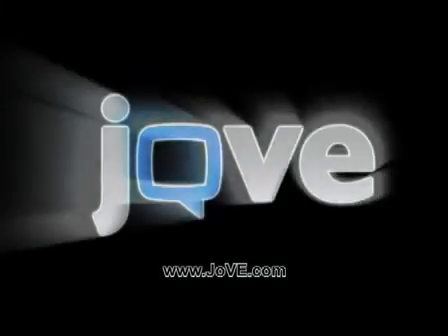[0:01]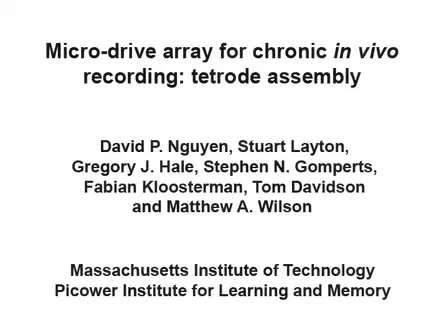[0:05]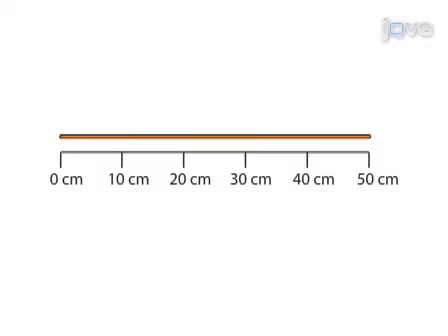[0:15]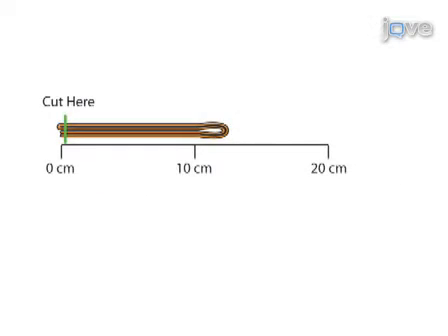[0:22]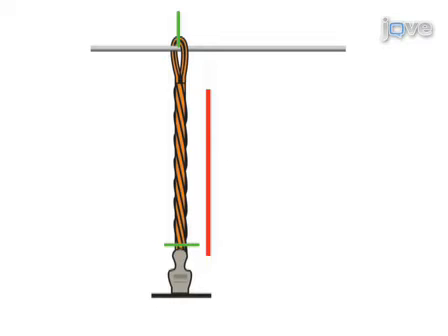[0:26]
In this protocol, we describe the fabrication and installment of tetrodes, bundles of four electrodes for chronic in vivo recording in the awake rodent. To begin tetrode fabrication, a strand of microelectrode wire is folded twice upon itself to make a bundle of four parallel wires. These wires are then twisted together and fused with a hot air gun.
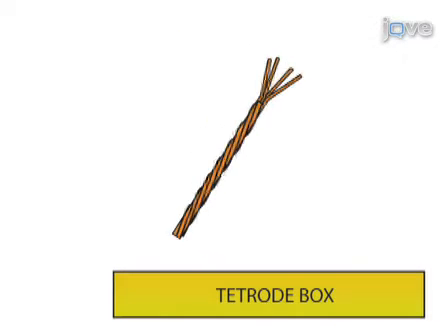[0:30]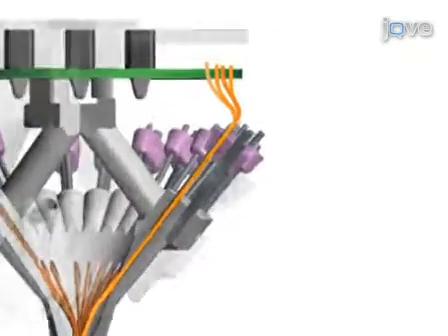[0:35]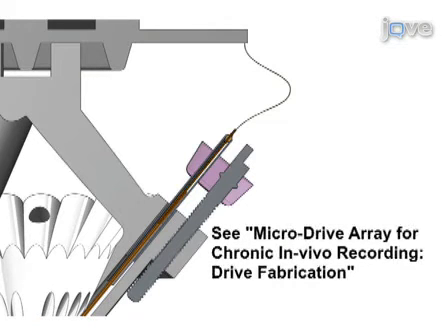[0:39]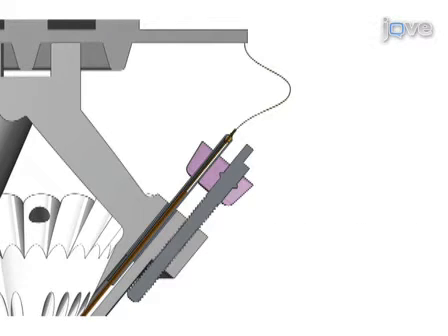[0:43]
Each finished tetrode is placed in a storage box while more tetrodes are made. Each tetrode is inserted down a dedicated pathway, entering through an opening in a linear actuator and exiting through the base of the microdrive array. Each of the four wires of the tetrode are connected to separate pins on an output connector board affixed to the top of the microdrive array.
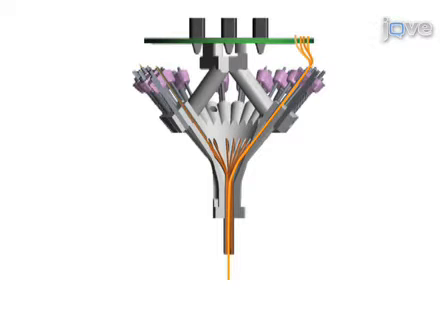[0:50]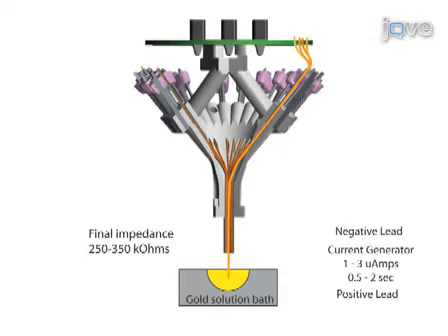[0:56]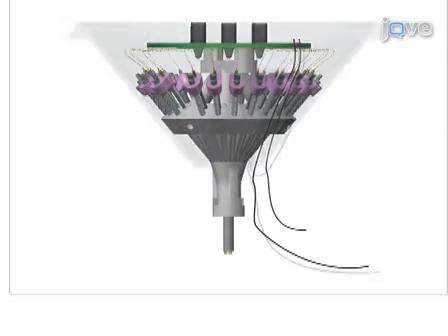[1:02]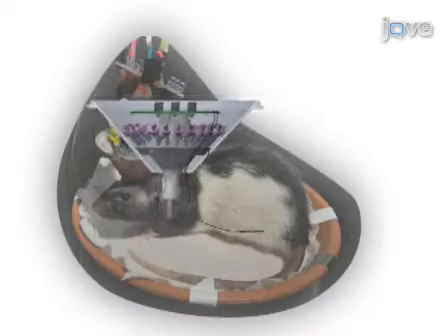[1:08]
The impedance of each channel of the tetrode is lowered using a gold electroplating process. Once all the tetrodes have been installed and electroplated, two ground wires are attached to the respective pins on the connector board, and a protective cone is affixed to the frame of the microdrive array for protection. After the cone has been grounded, a fully functioning tetrode microdrive array is ready for implantation.
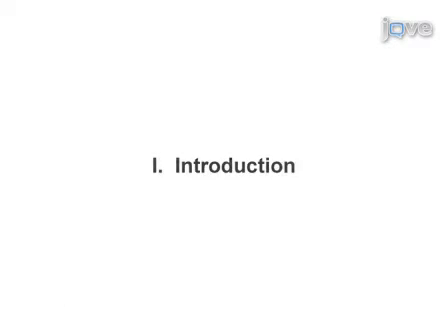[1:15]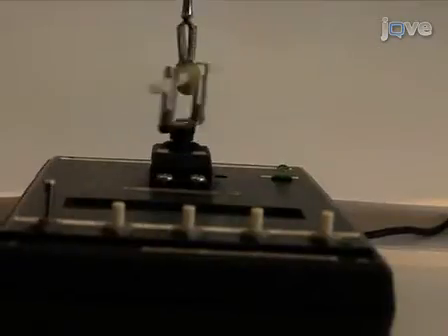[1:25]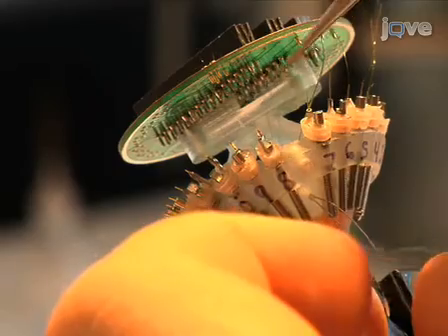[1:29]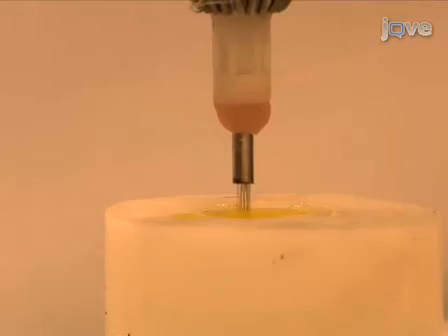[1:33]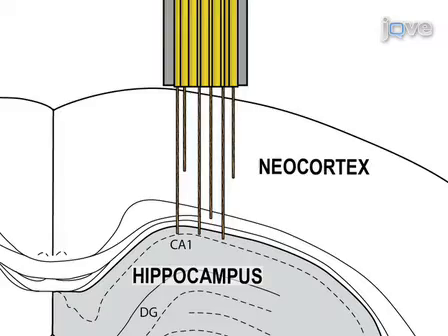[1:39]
Hi, I'm Dave Nguyen from the laboratory of Matt Wilson in the Picower Institute for Learning and Memory at MIT. Today, we will show you a procedure for fabricating tetrodes, loading tetrodes, and completing the final stages of the microdrive array construction. We use this procedure in our laboratory to study coordinated neural activity between large populations of neurons in an awake behaving animal preparation. So, let's get started.
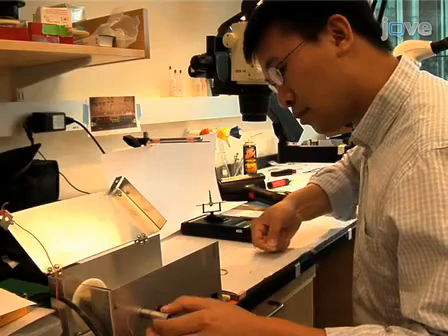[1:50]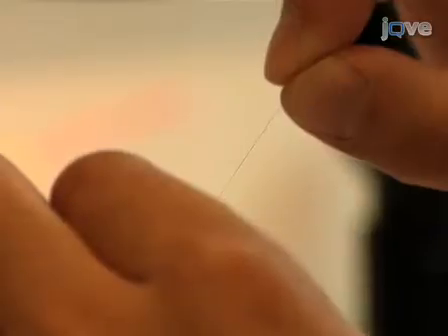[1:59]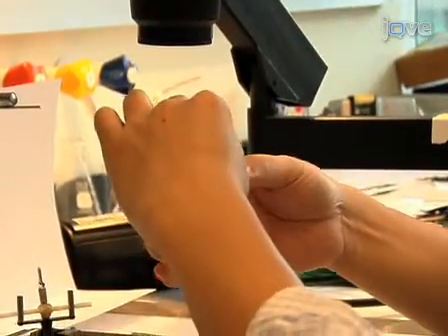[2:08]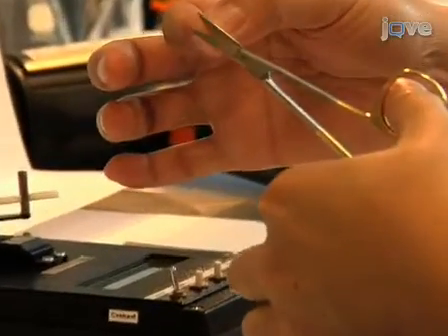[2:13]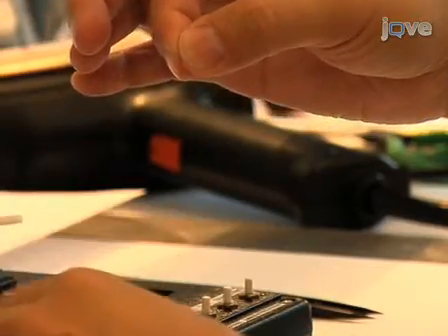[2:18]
To build the tetrode for our standard microdrive array, we begin with a 50 centimeter length of insulated 12 micron nichrome wire. Fold the wire in half. Run your fingers along the pair to make them stick together. Make sure the pair of wires have good contact throughout their entire length. Fold the pair again by holding the two ends together. Make sure that the loop formed on one end is not kinked. Cut the four wires on the non-looped end so that the four tips are aligned.
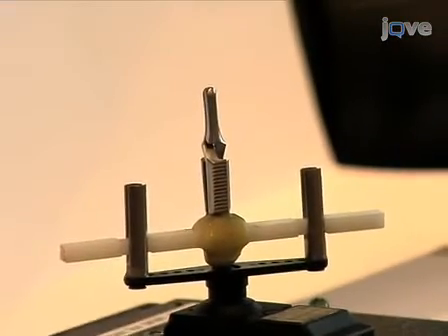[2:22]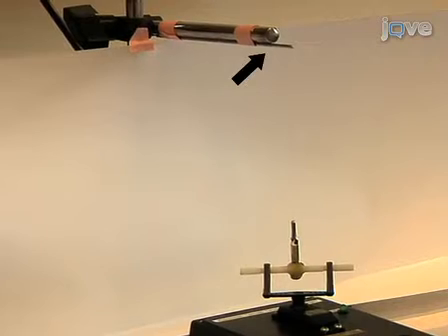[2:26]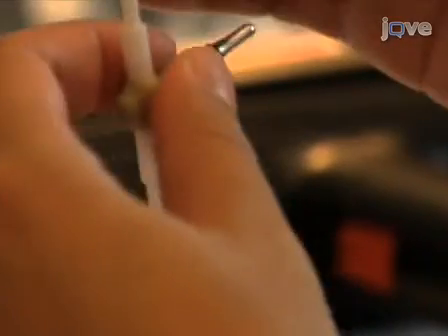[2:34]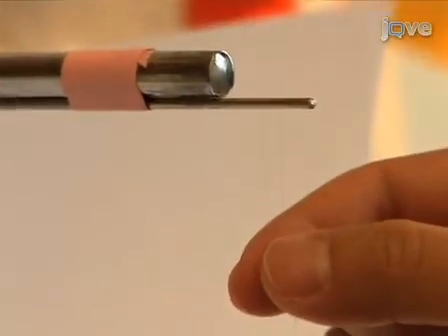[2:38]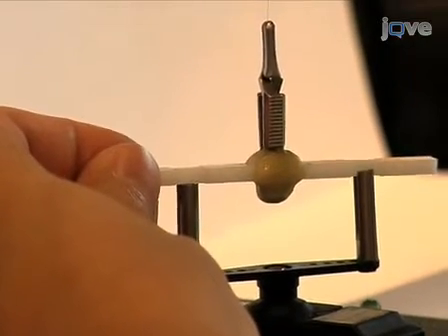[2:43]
For the next step, you will need a modified alligator clip, a motorized turning device, and a horizontal bar above the turning device. The alligator clip is modified by gluing a plastic bar to the base of the clip. When the tips are exposed, clamp the four wires together with the modified alligator clip. Hang the loop of wire over the horizontal bar. Place the alligator clip into the motorized stage.
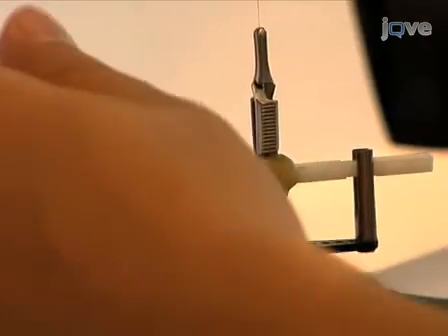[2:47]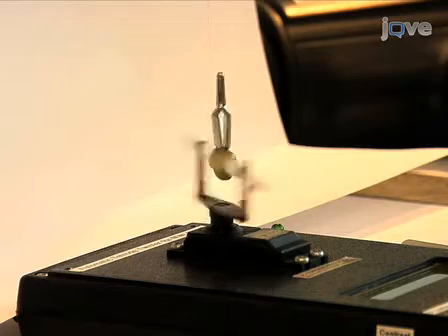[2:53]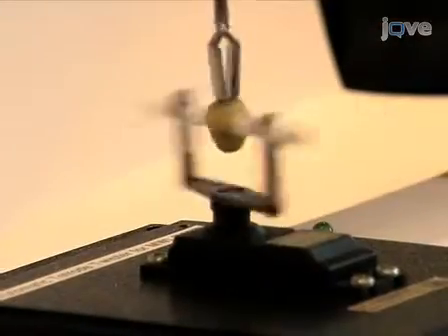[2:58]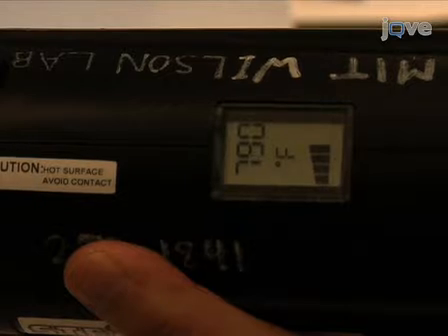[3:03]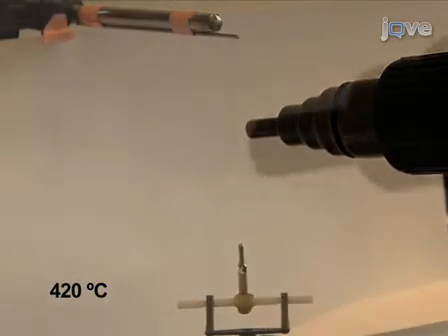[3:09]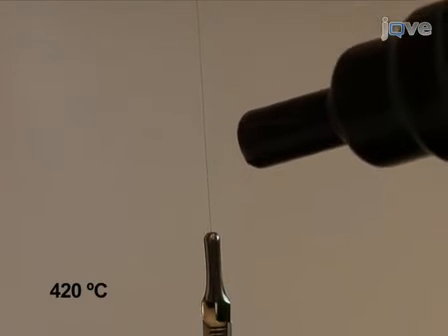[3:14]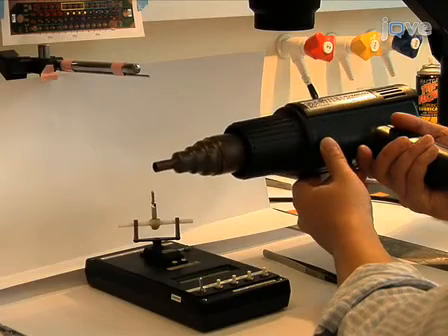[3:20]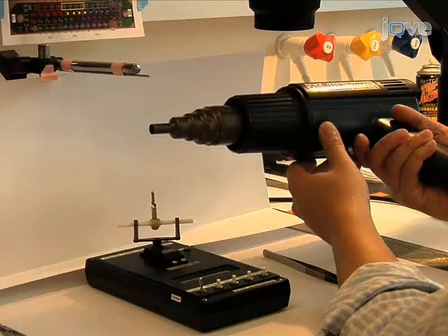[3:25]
Apply 80 clockwise twists, followed by 40 counterclockwise twists to the wire bundle over the course of approximately 3 minutes. These parameters can be varied according to your needs. After tetrode twisting is completed, fuse the wires together by heating from 3 different angles with a heat gun using medium to low flow. For each angle, begin 1 to 2 centimeters below where the wire bundle splits. Then run the heat gun down and up at a 2 centimeter distance from the wires for about 5 seconds. Use caution, as high temperatures will completely melt the insulation and lead to short circuits.
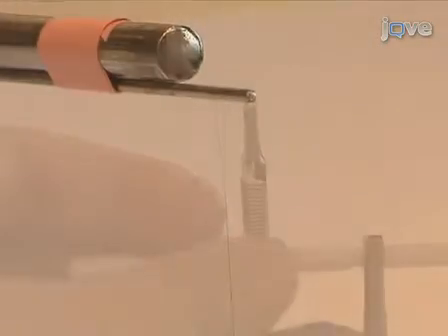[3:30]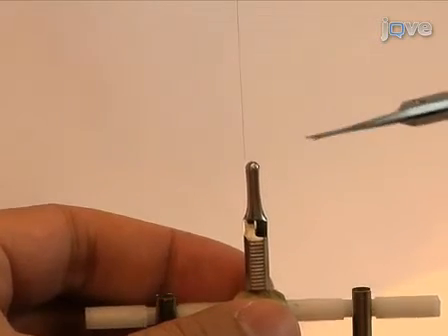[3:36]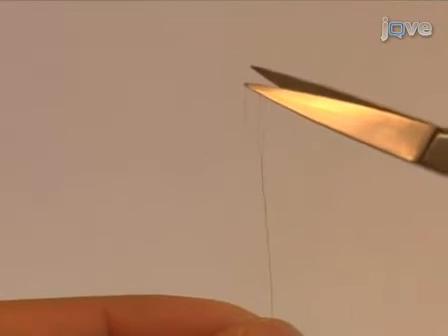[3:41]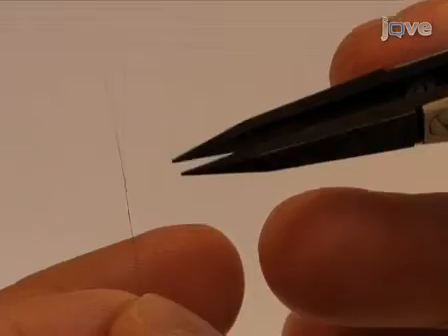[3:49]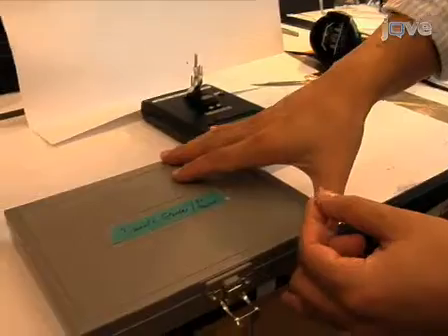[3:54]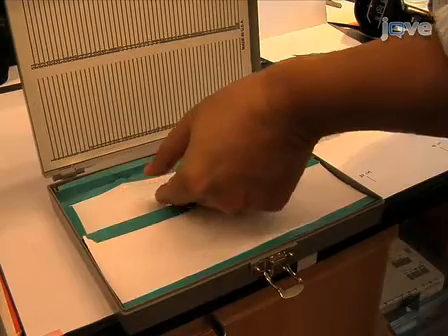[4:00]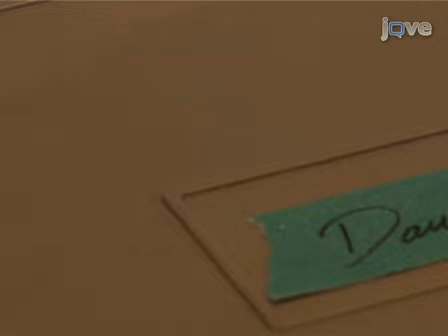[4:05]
Now that the wires have fused together, remove the tetrode from the twisting apparatus by gently lifting the alligator clip to relieve tension on the tetrode, and cut the tetrode near the alligator clip. At the other end, cut the loop such that there are 4 non-bonded strands of wire of equal length. Next, separate the individual strands at the top by gently bending the wires with a soft-tipped pair of tweezers. The tetrode is now ready for loading into the microdrive array. Make 21 to 25 more tetrodes and store them in a dust-free box until it is time for the tetrode loading process.
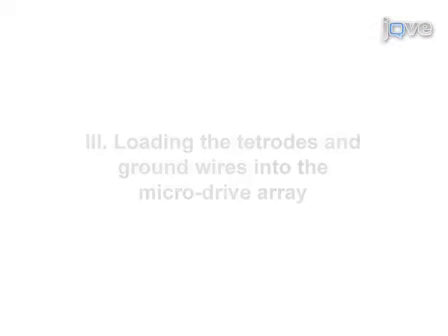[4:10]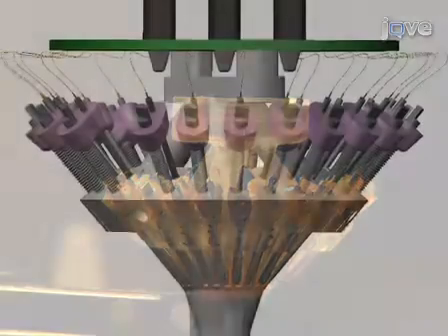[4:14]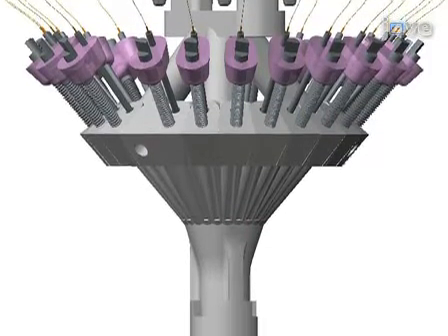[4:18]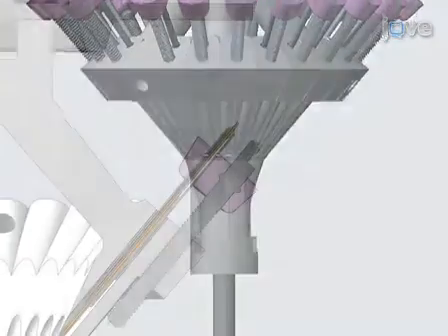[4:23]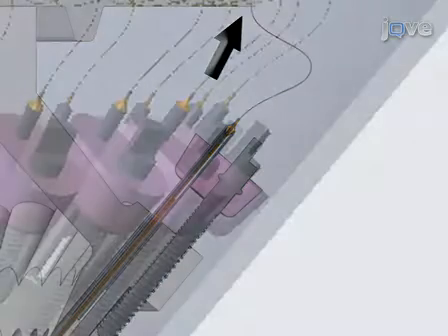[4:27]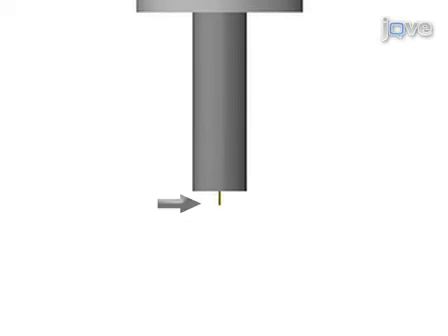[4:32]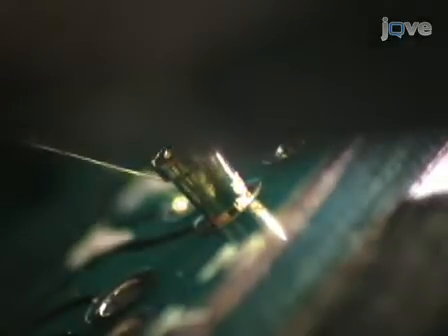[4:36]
To proceed, you will need a complete microdrive array. If you have not yet built one, refer to the video Microelectrode Drive Array for Chronic In Vivo Recording, Microdrive Array Fabrication. In our design plan, the tetrode will be attached at one end to connector hardware and will run through the polyimide carrier tube in the microdrive such that the electrode tips extend below the base of the microdrive array. We will now demonstrate this loading process for one tetrode.
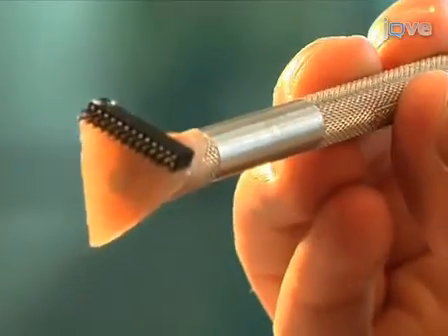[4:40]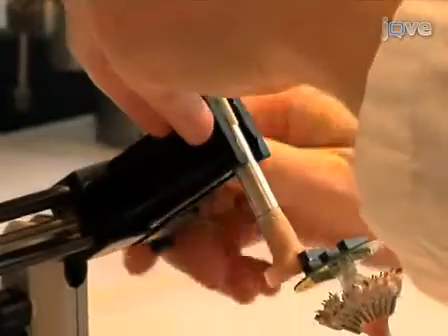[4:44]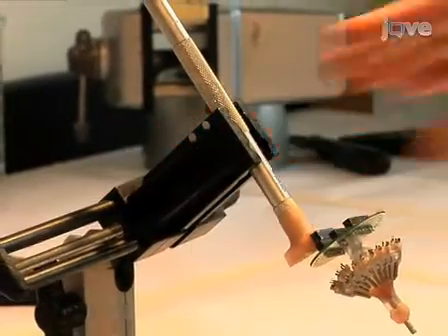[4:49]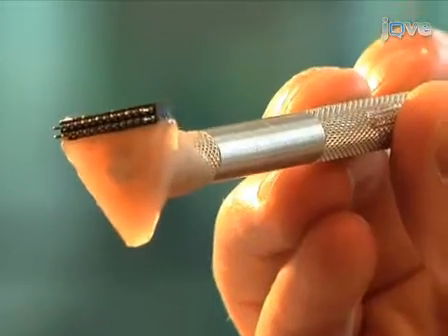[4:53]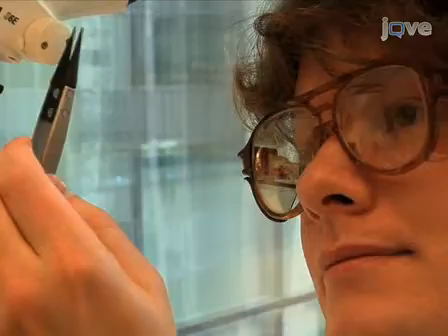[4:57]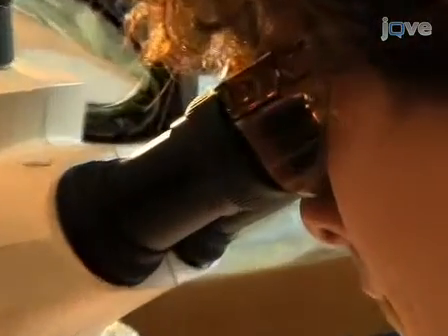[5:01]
Before beginning, build the drive holder that can be attached to the connector board on one end, and on the other end can be clamped by a Panavise. In this example, the drive holder is a Mill-Max connector glued to one end of an X-Acto knife handle. Holding the tetrode with soft tip tweezers and using a stereoscope, push the tip of the tetrode into the polyimide carrier tube of one of the microdrives.
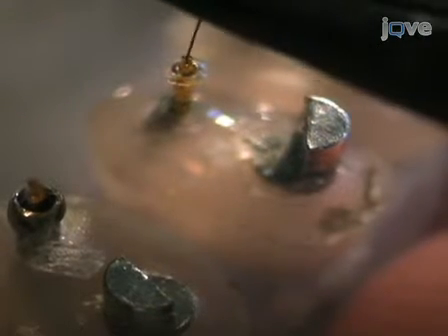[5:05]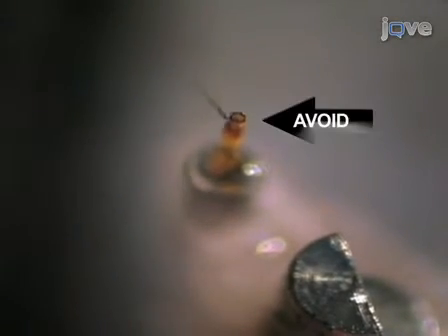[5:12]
Push the tetrode into the tube until the individual electrode wires are close to the connector board at the top of the drive array. Be careful not to kink or bend the wires, as this will cause the tetrode to enter the brain at an angle rather than perpendicular and will weaken the integrity of the tetrode.
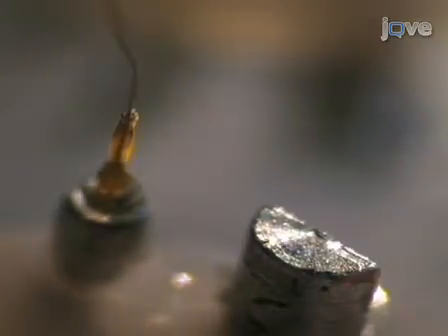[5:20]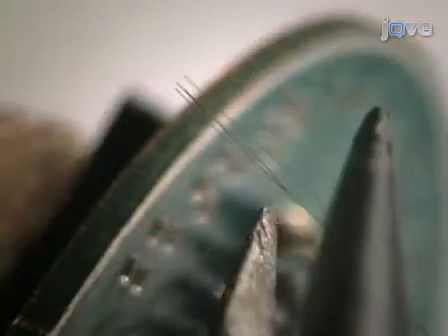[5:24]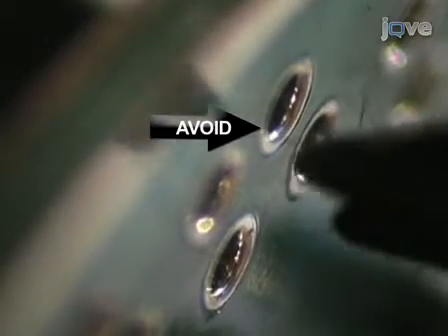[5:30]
Now, gently feed the other end of the four wires into their respective holes in the electrode interface board using soft-tip tweezers. Again, avoid kinking or bending the wires.
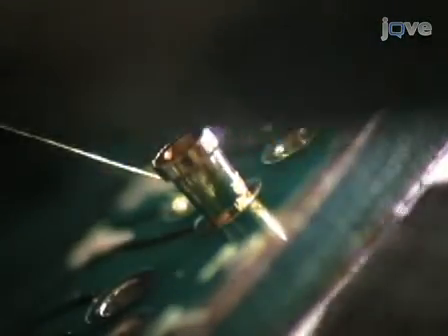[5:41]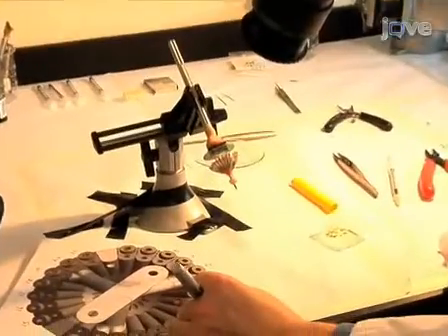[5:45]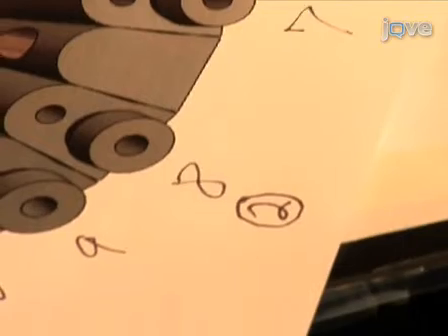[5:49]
With all four wires in place, push the gold pins into their holes with a pair of pliers that have a shortened lower jaw. When the pins are pushed into the hole, they will strip the wire insulation and create an electrical connection. For later reference, keep track of the mapping between microdrives and pin position on the electrode interface board.
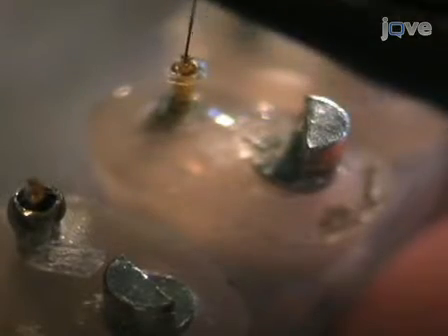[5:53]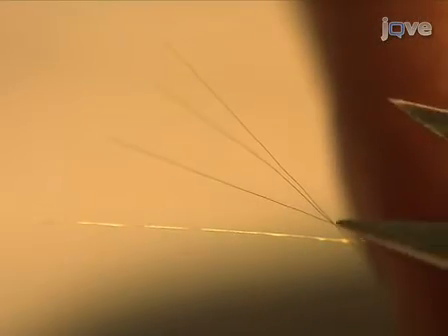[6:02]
Continue loading a total of 18 tetrodes. The three remaining microdrives on the array will be used to house the reference electrodes. Each reference electrode is made of a tetrode that uses only one of the four unbonded wire ends. To attach the reference electrodes, follow the loading procedure but attach only one of the four electrodes to the respective reference electrode pin on the connector board.
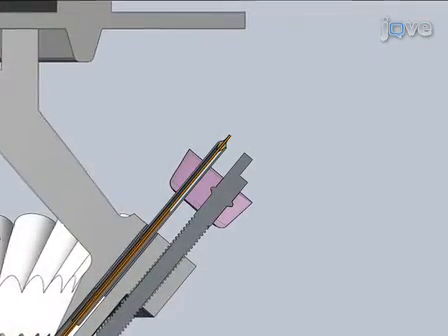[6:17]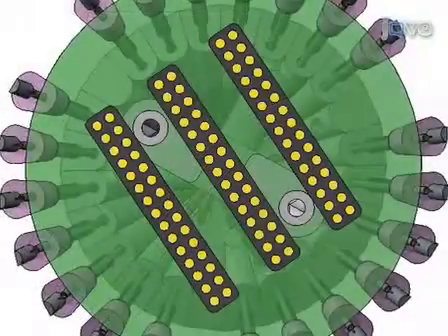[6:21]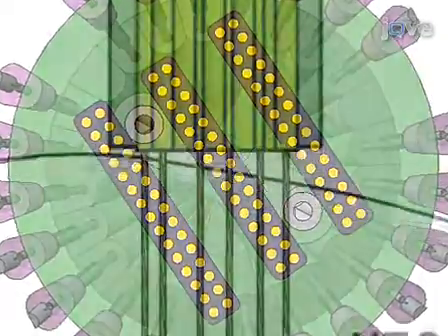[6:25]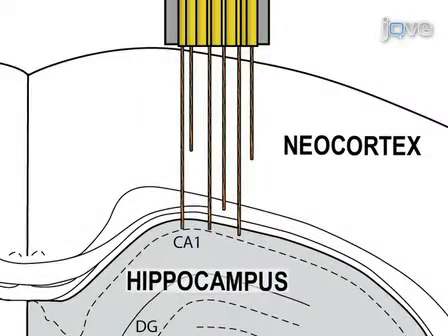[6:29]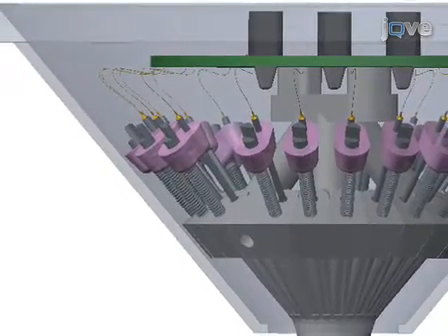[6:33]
If you are planning multi-site recordings, it may be worthwhile to plan out the connections from the tetrodes to the connector board ahead of time. For example, cluster tetrodes that are targeted to one anatomical region together on the electrode interface board. This should minimize the possibility of adjusting the wrong tetrode during experiments.
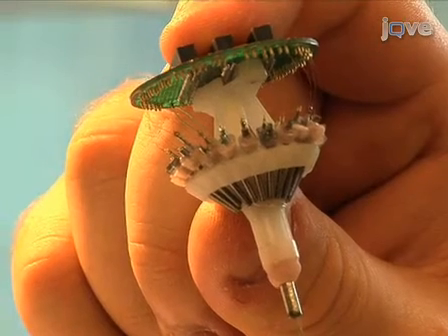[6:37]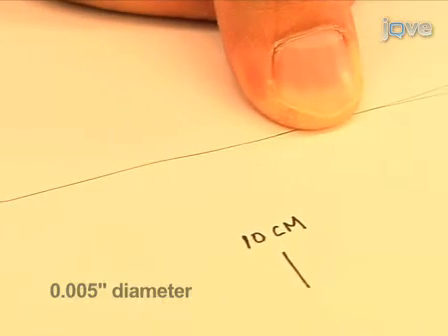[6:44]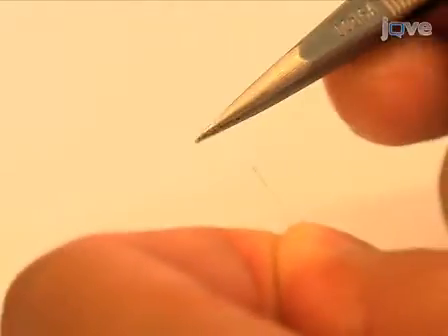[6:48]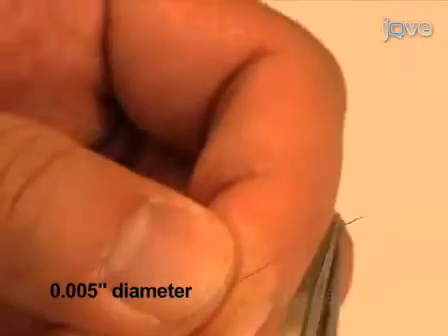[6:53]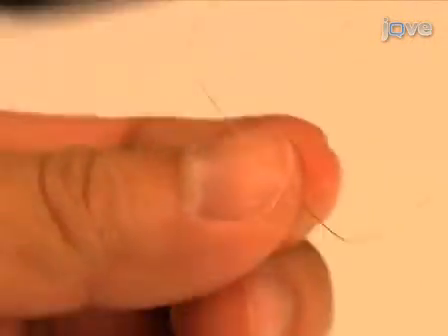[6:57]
Once tetrode loading is completed, make two ground wires, one for the animal and one for the protective cone. Cut one 6-inch long insulated steel wire and remove 3 millimeters of insulation using metal tweezers from each end of the wire. Then cut a 4-inch long insulated steel wire. Remove 3 millimeters of insulation at one end and 1 centimeter at the other end.
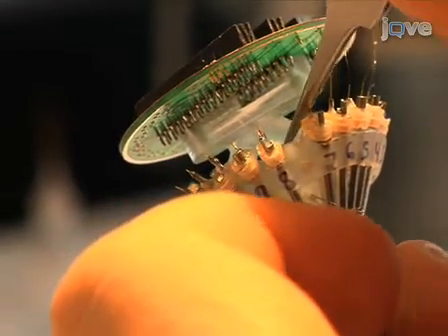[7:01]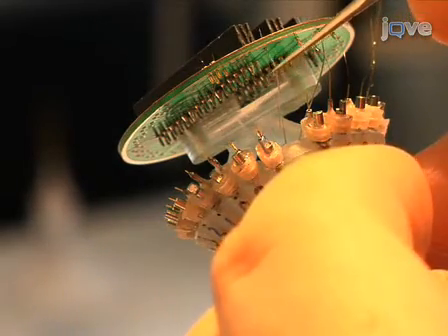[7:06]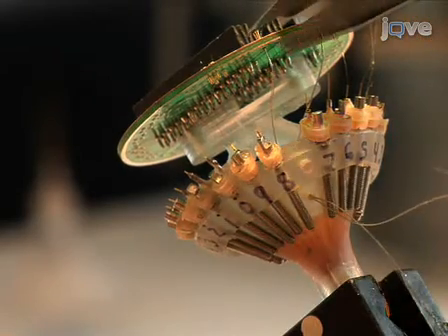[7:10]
Route the 6-inch ground wire through the hole on the side of the microdrive array and up towards the interface board. Connect the exposed wire to the electrode interface board with a gold pin at the designated ground hole. This wire will connect to the animal's skull.
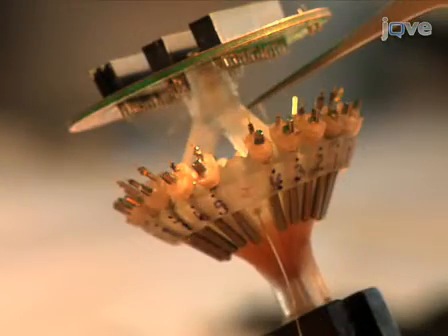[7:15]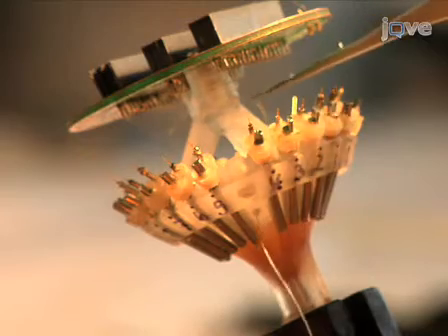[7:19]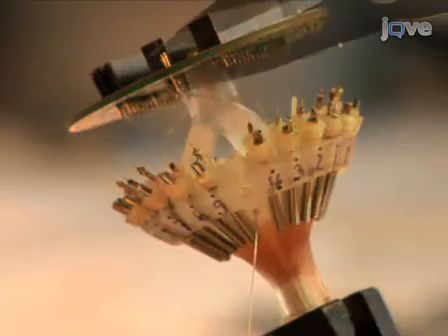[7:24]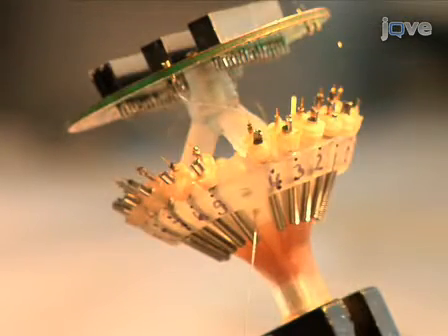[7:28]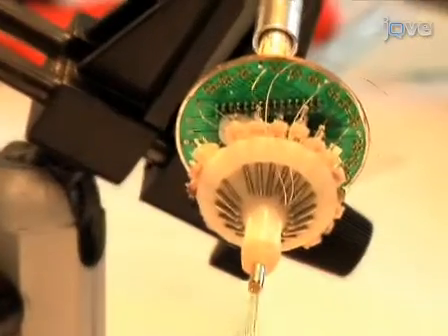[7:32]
Route the 4-inch ground wire parallel to the previously installed ground wire. Connect the 3 millimeter stripped end to the electrode interface board using a gold pin at another designated ground hole. This wire will later be connected to a protective cone, which will act as a small Faraday cage to reduce noise pickup. We are now finished connecting wires and can proceed with refining our tetrodes.
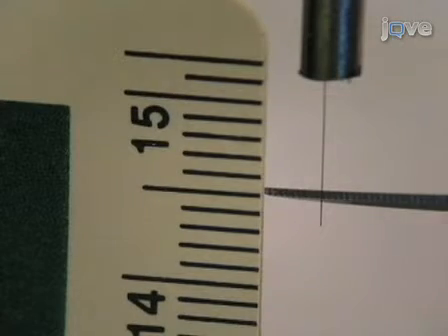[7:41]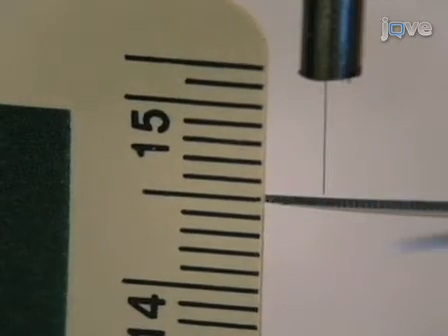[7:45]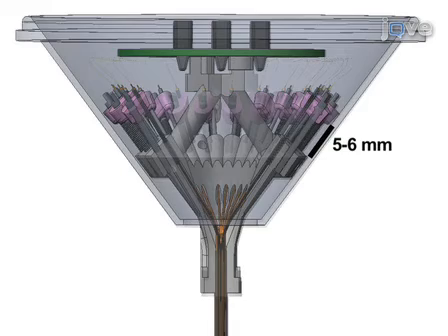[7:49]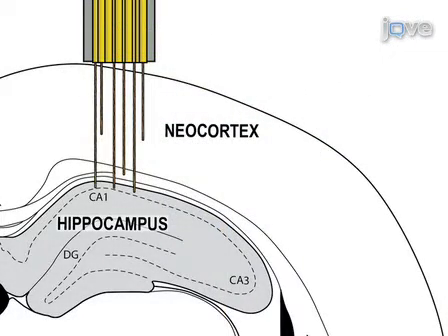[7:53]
Our goal in this process is to cut all the tetrodes so that they are slightly longer than the depth of the target brain structure. In our example, the microdrives are designed for a maximum travel of 5 to 6 millimeters, sufficient to reach many neocortical areas and the dorsal hippocampus of an adult rat.
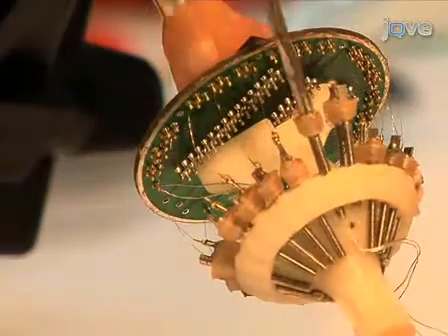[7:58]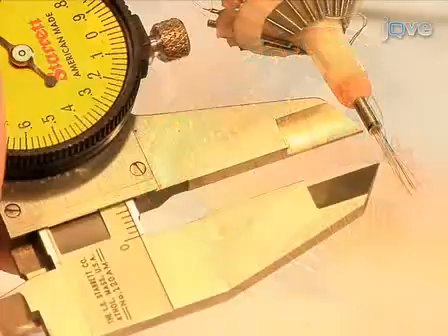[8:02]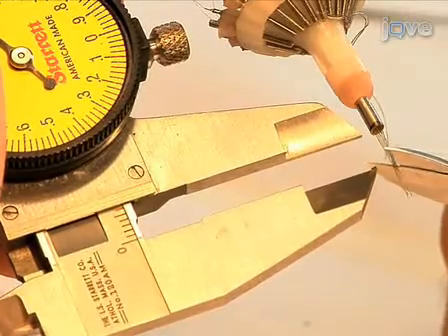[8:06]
First, lower all the microdrives so that the tetrodes are maximally exposed. Simultaneously cut all the tetrodes to lengths that are approximately 5 millimeters longer than the desired final length using a pair of sharp, fine scissors.
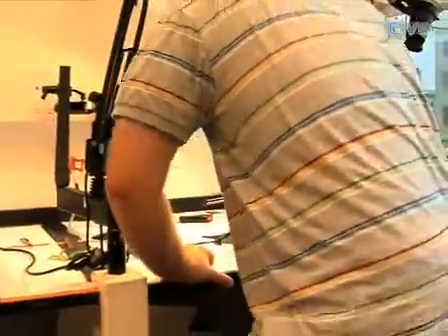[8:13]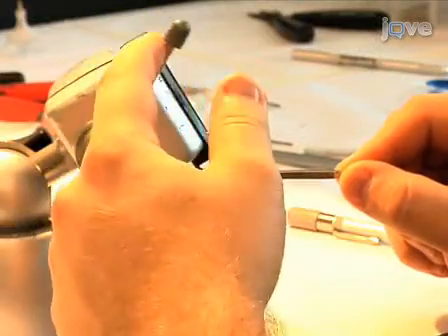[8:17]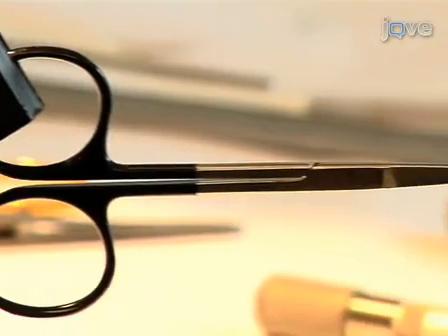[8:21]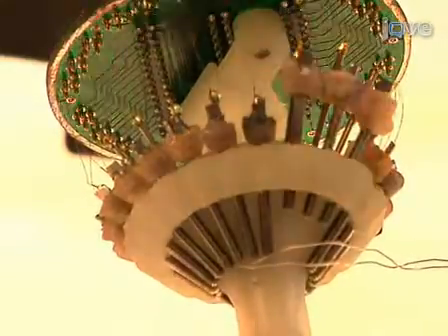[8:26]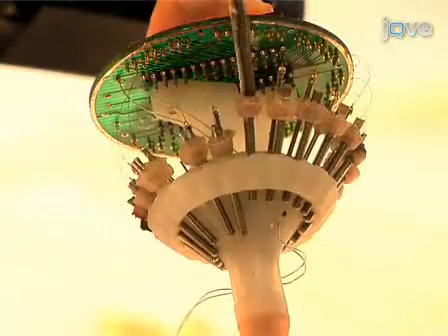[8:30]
For the final cut, prepare a pair of serrated scissors and a pan of ice. Clamp one handle with a slight angle downwards and with serrations facing upwards, while leaving the other handle dangling. Now completely withdraw all the tetrodes into their guide cannulae by turning the microdrives up.
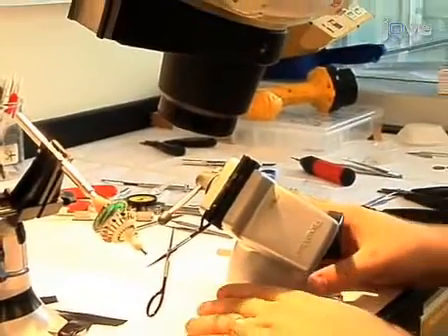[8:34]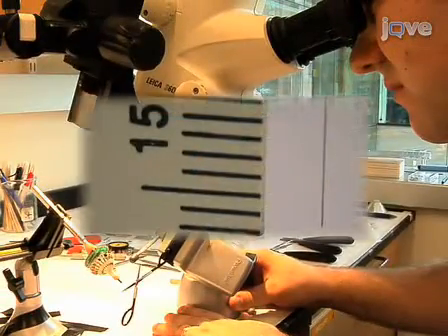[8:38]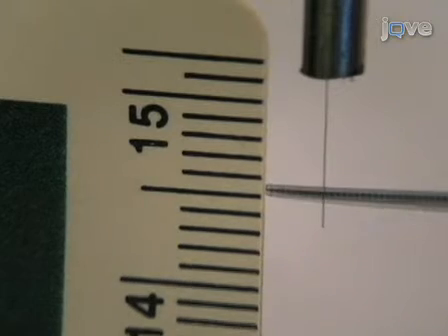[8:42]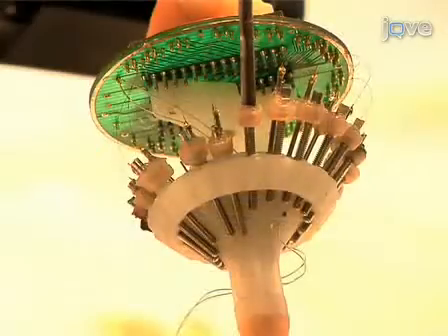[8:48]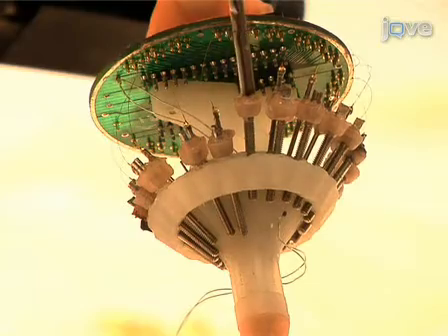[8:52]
Using a stereoscope, fully extend one tetrode out from its cannula. Using a ruler, position the serrated scissors at the desired distance from the guide cannulae. Slowly and gently cut the tetrode with one smooth movement. After this tetrode has been cut, withdraw the microdrive up by 3 to 4 millimeters. Repeat this process for each tetrode until all have been cut. At this point, you are ready for gold plating.
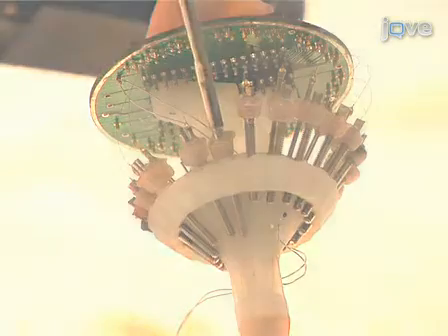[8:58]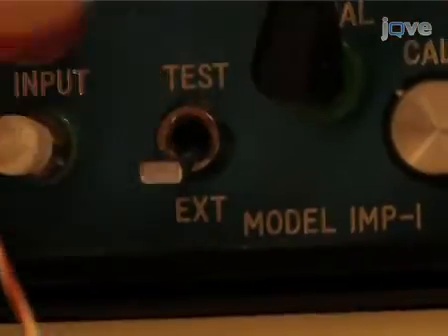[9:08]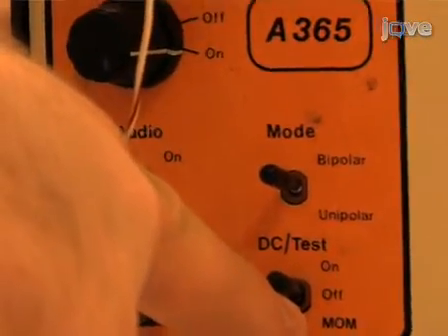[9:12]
Gold plating the nichrome tetrodes is critical for long-term stable recordings. It prevents corrosion and improves biocompatibility. Set up the impedance meter in external mode and the current generator in DC check mode with audio output.
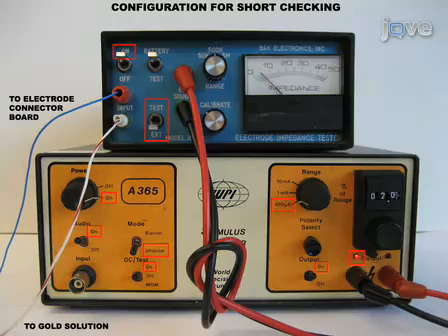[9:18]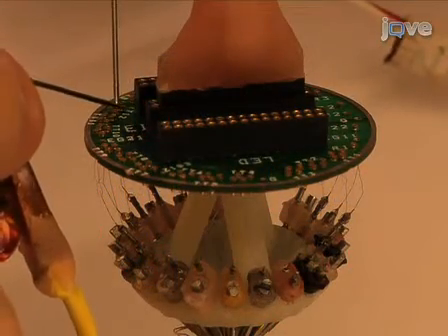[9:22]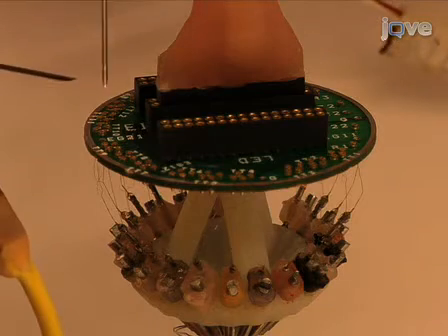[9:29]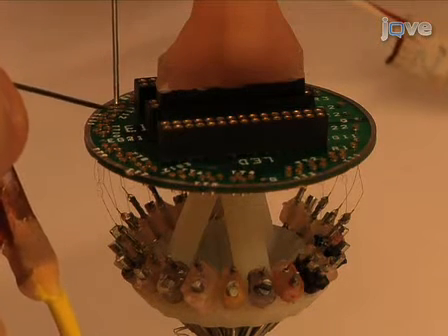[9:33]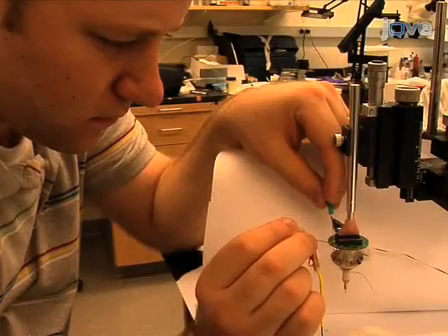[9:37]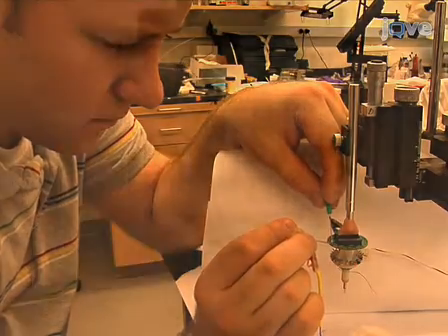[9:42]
Touch the two leads of the current generator to the six possible pairs of channels within each tetrode and use the audio feedback to determine if shorts exist between pairs. A short between channel pairs sounds like this. If a short exists, recut the tetrode with serrated scissors and test again.
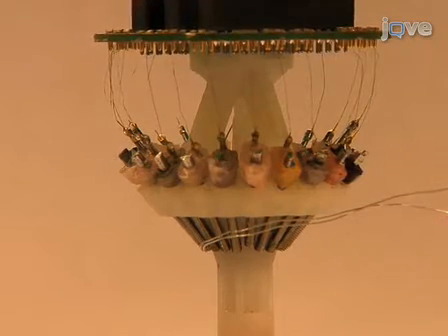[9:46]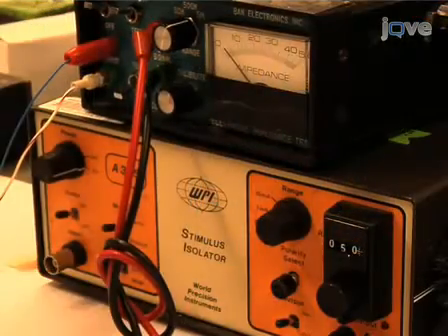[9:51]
If the problem persists, discard the tetrode and replace it. Move all the microdrives down, extending all the tetrodes as far out as possible. Modify the equipment configuration for checking electrode impedance.
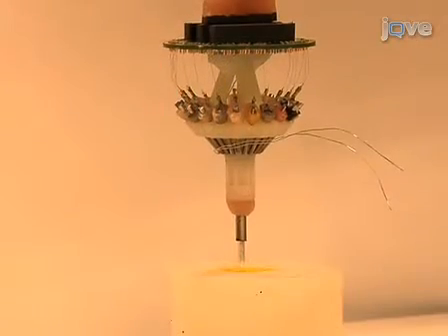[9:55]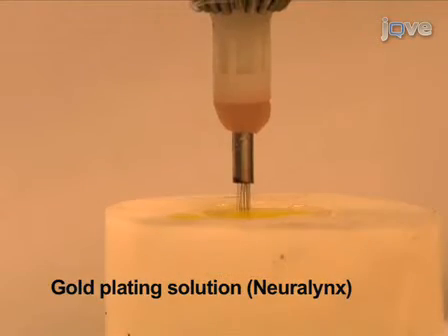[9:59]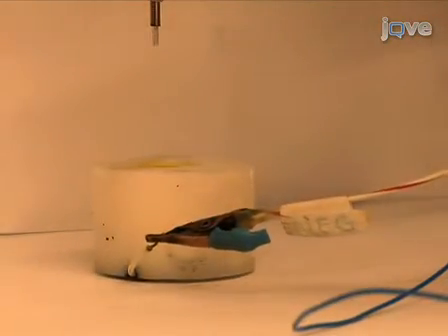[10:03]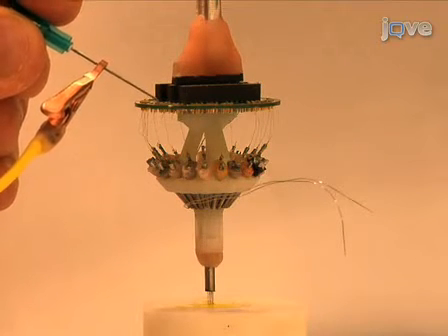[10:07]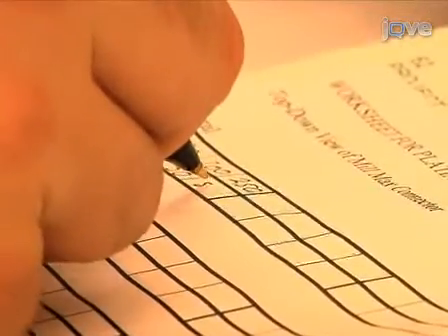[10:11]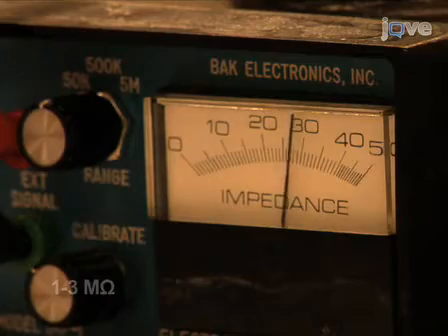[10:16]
Now dip the tips of all the tetrodes into a bath of standard gold plating solution. The gold bath is electrically connected to the negative lead of the impedance meter. Check the impedance of the electrode by touching the positive lead of the impedance meter to the corresponding pin on the connector board. Measure and record the impedance of every wire on the microdrive array. Normal values range from 1 to 3 megaohms.
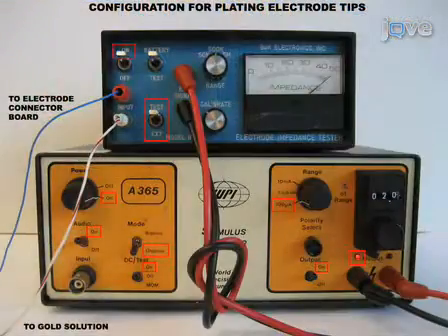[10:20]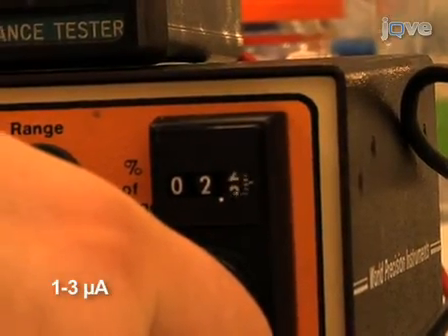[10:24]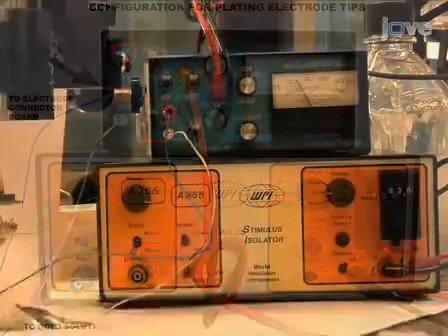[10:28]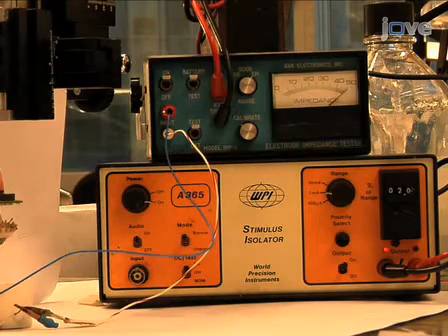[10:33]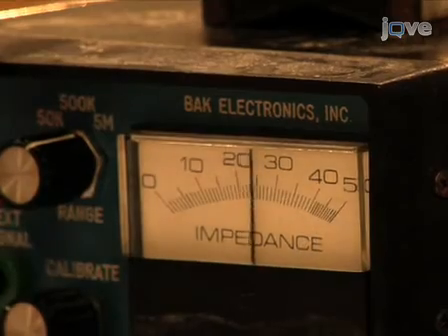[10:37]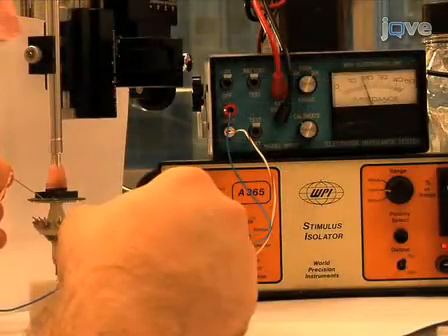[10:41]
On the current generator, set the current between 1 to 3 microamps. Next, securely attach the positive lead of the impedance meter to the pin on the connector board. On the impedance meter, quickly switch from normal mode to bypass mode and back. While in bypass mode, current will pass through the tetrode and gold solution and gold will be plated onto the electrode tip. The impedance after each round of plating should be less than before.
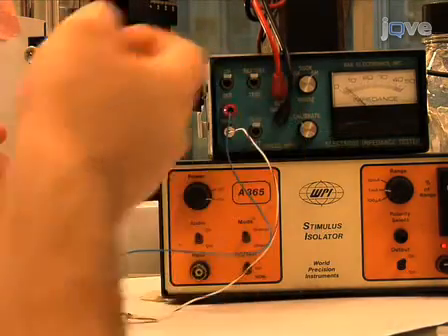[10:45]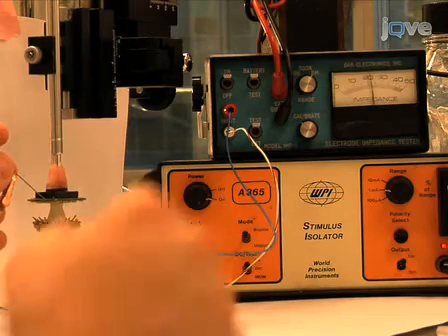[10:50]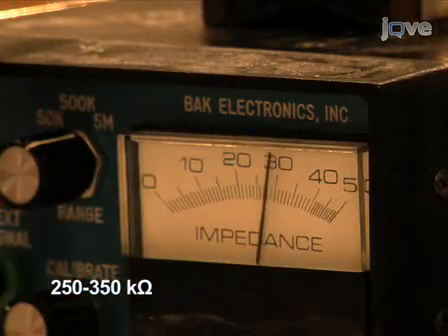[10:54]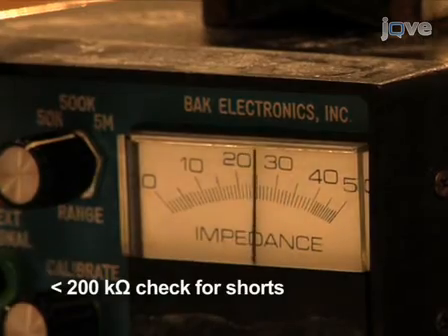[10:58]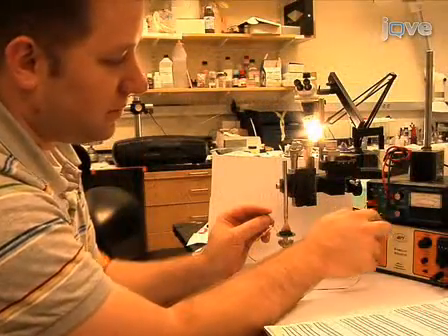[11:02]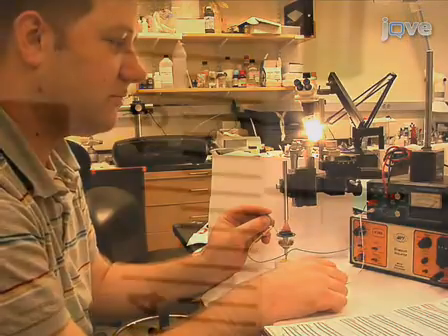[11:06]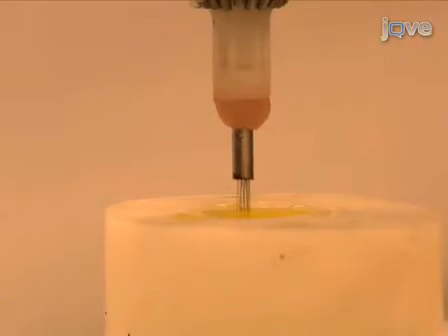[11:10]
Repeat the current pulse if the impedance did not drop below 1 megaohm. A conservative range of acceptable impedances are 250 kiloohms to 350 kiloohms. If the impedance drops below 200 kiloohms, this may indicate a short circuit. If after repeated pulses the impedance does not drop sufficiently, the electrode tip may be obstructed. Recut the tetrode, check for shorts, and repeat the gold plating process. If recutting doesn't help, replace the tetrode and start again.
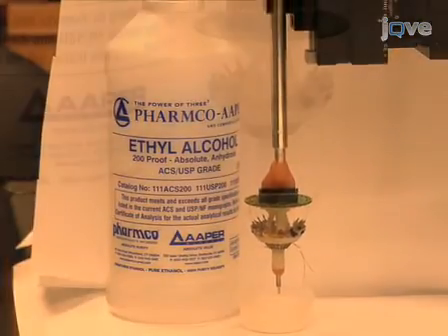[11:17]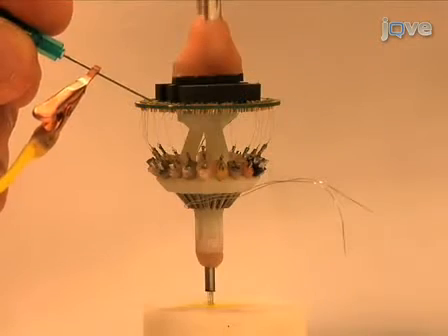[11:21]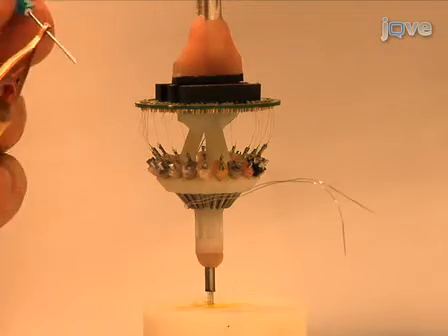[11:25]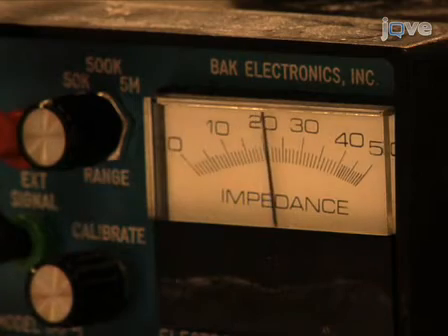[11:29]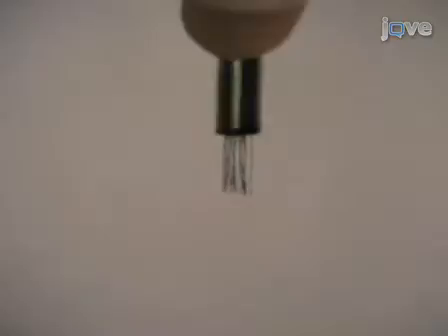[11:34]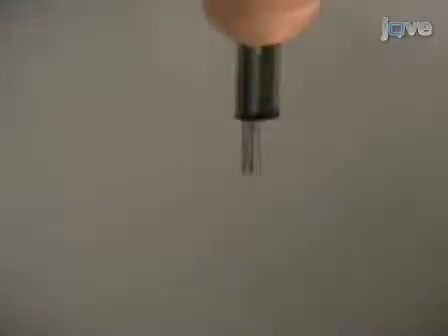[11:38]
After plating all tetrodes, dip them in ethanol and let them dry for 3 to 5 minutes. Test for short circuits within tetrodes using the current generator with the tetrode tips exposed to air. If a DC connection exists between two or more electrodes of a tetrode, recut the tetrode and plate with gold again. After gold plating of all the tetrodes is complete, move all the tetrodes into the drive.
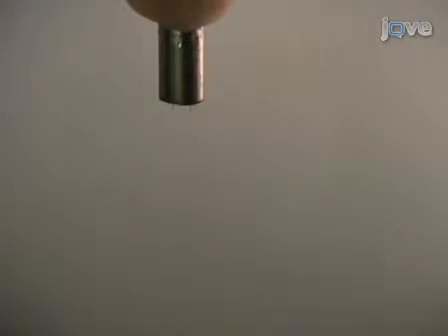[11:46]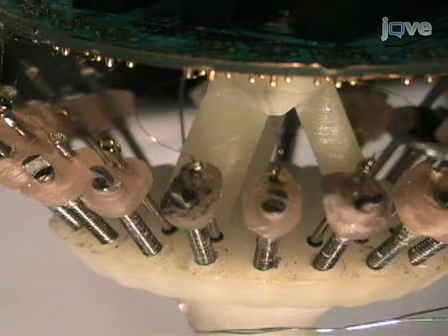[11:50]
As a final step, at the top of each microdrive, add a drop of medium thickness cyanoacrylate glue to the interface between each tetrode and its polyimide tubing. This will secure the tetrode to its microdrive.
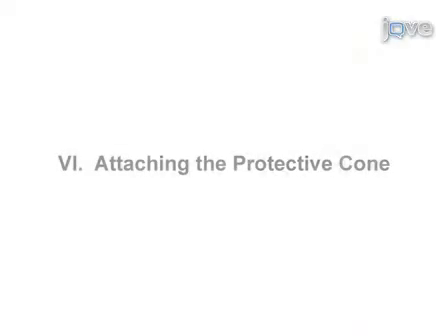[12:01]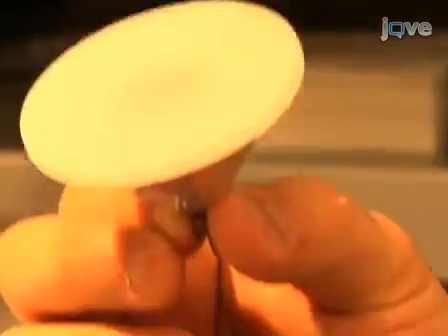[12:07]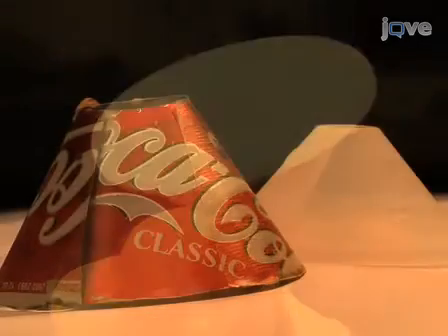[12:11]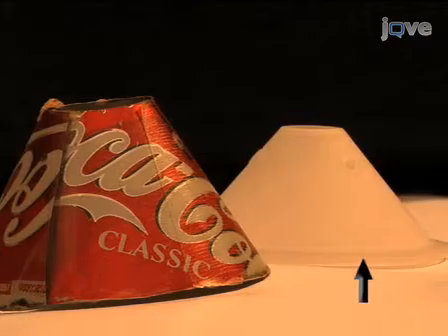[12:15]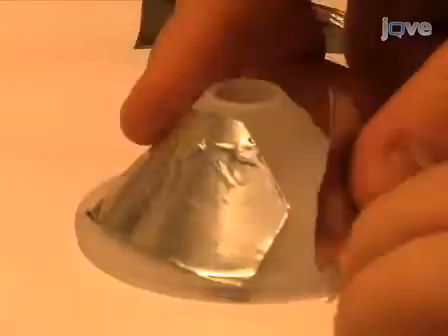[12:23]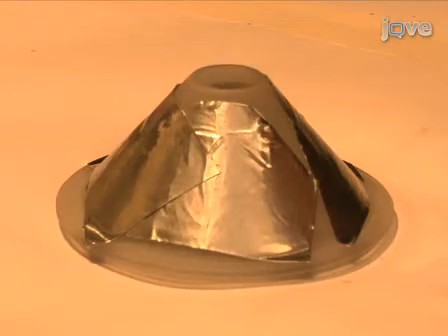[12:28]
The protective cone's purpose is to shield microdrives and the exposed tetrode wire from the environment. It also provides support for handling during an experiment and reduces electrical noise. We use a 3D printed plastic cone. However, it is possible to make the cone from other materials like a bent piece of soda can. Take the plastic cone and fix some aluminum foil tape to the inner or outer surface.
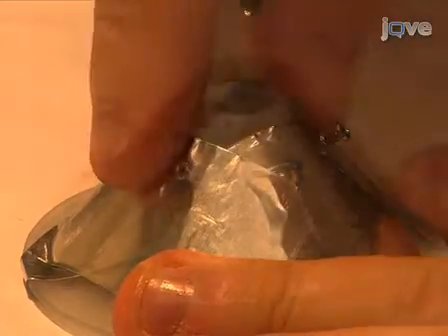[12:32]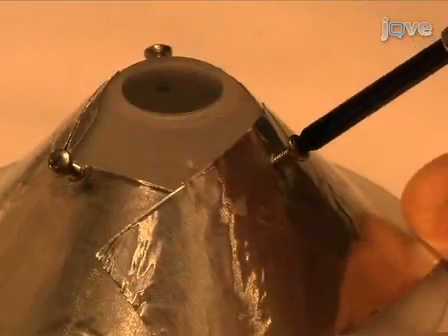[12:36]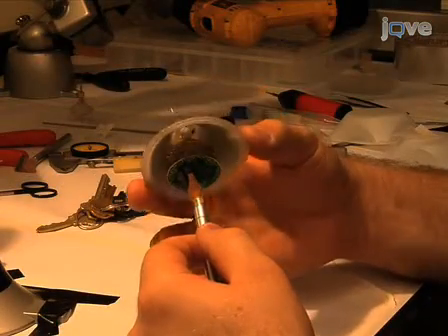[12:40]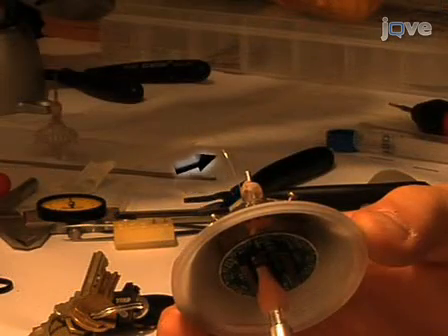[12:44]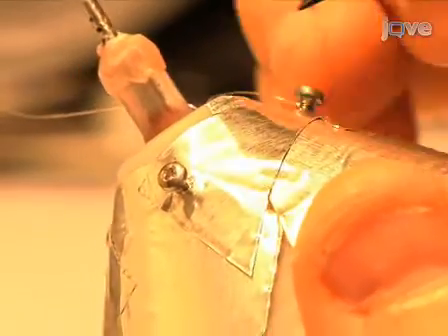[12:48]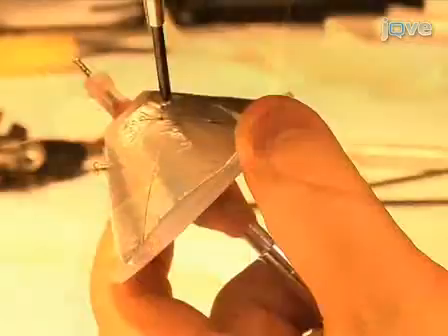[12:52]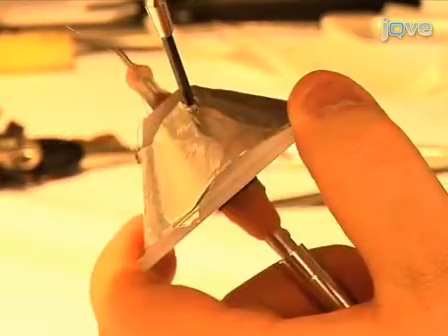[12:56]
First, insert and partially turn three 1/72 size screws, 3/16 inches in length, into the sides of the cone. With the drive array suspended, insert the cone over the drive. Make sure both ground wires extend from the bottom of the drive array. Wrap the exposed part of the 4-inch ground wire around one of the 1/72 screws several times and fasten the screw tightly. Secure the cone to the drive base by tightening the remaining two cone screws.
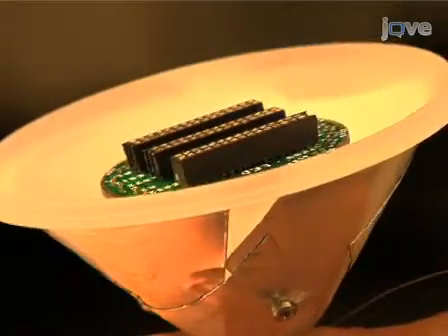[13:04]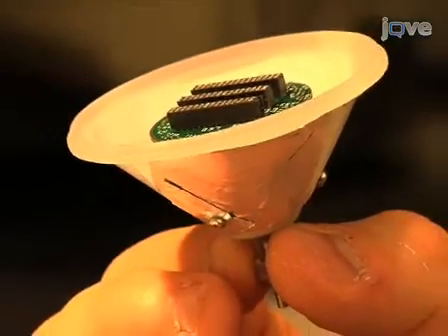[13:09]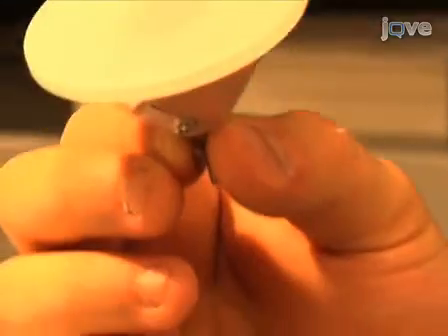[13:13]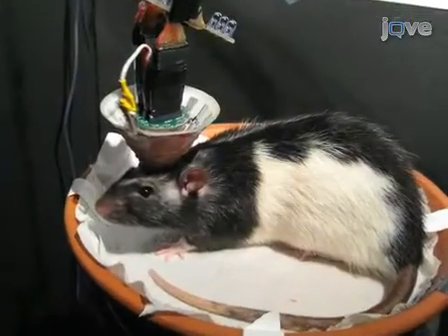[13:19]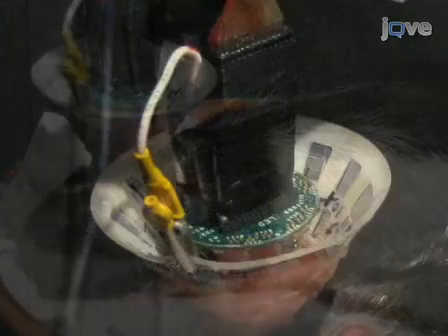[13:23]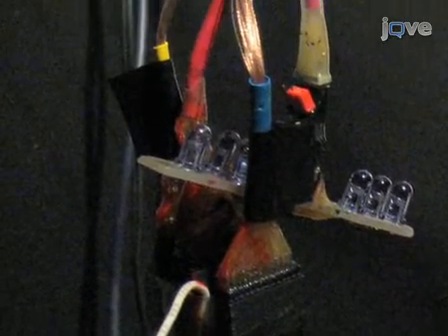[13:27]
Microdrive array production is now complete. Your microdrive array is loaded with 18 tetrodes and 3 references. It is encased in a protective cone and cap for durability. The finished drive usually weighs 20 to 25 grams on average. The finished drive array is implanted using standard surgical procedure. As you can see, the drive is attached to a preamplifier chip and a bundle of wires that carry the signal to data acquisition hardware and software.
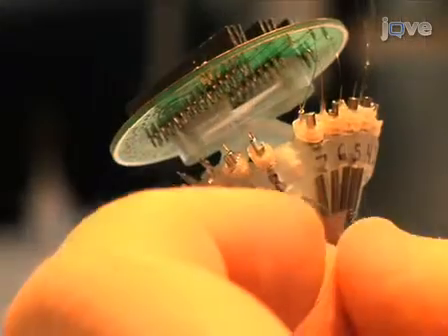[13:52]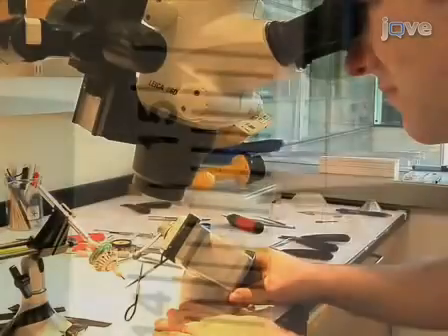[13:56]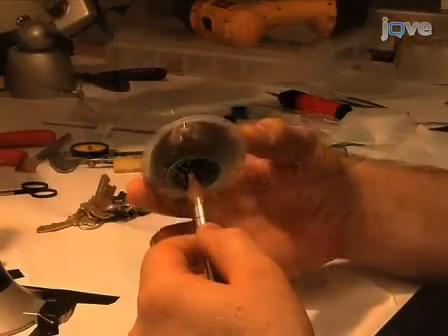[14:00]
We have just shown you how to make tetrodes and complete the microdrive array construction procedure. In this video, we showed you how to fabricate tetrodes, load and condition the tetrodes for in vivo recording. In addition, we showed you how to add a cone to the microdrive array to make it robust over time. There are many steps in the microdrive array construction, so be patient, be gentle with the electrodes, and make sure all the intermediate steps are properly completed.